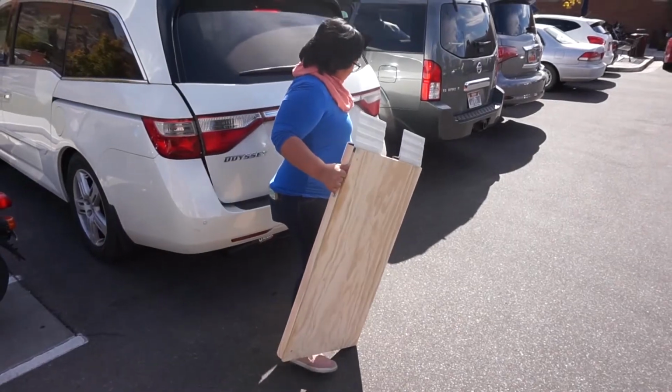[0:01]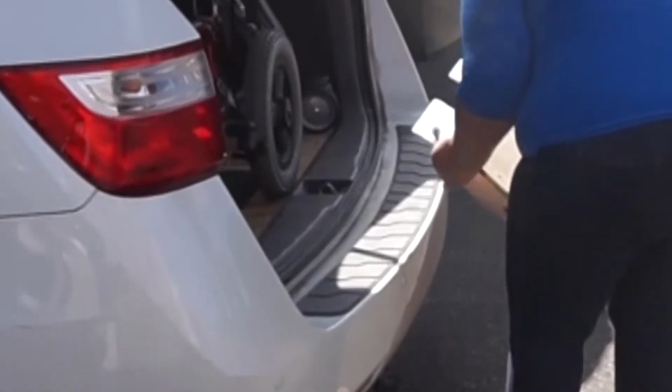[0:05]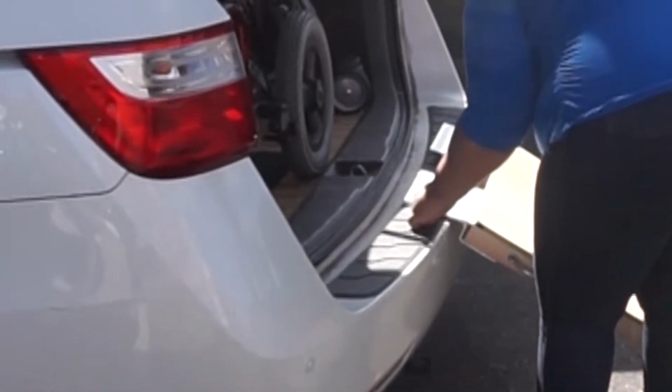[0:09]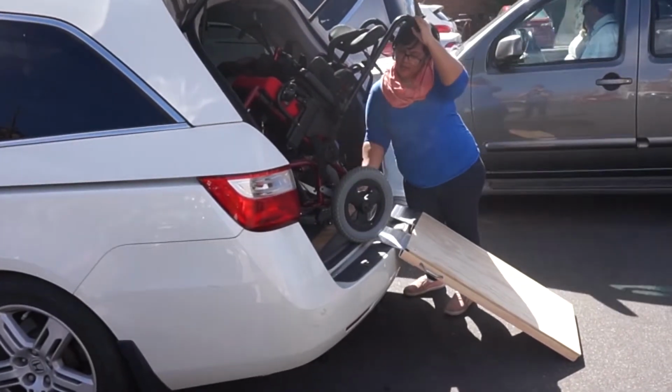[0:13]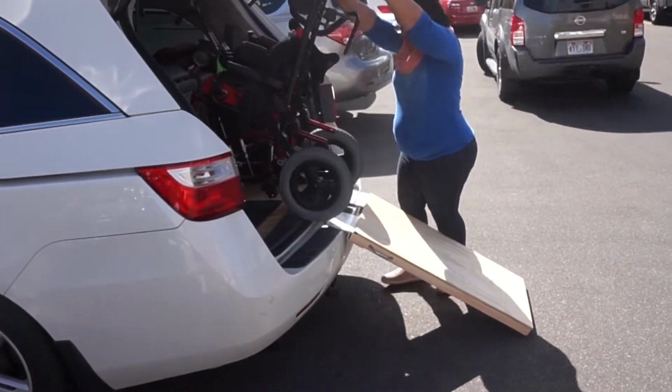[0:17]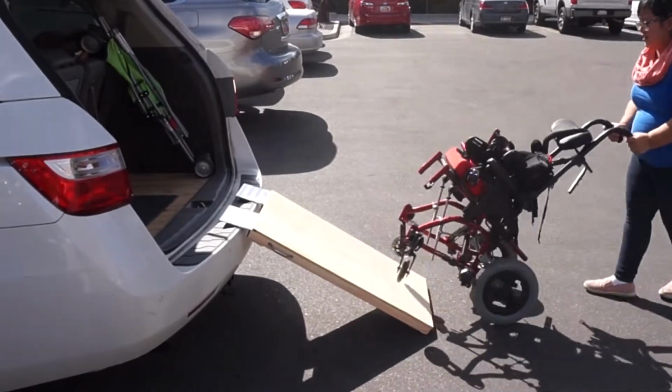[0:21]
Hey guys, today's video is a little different in hopes that I can help someone out there looking for a way to get their child's wheelchair into their vehicle with a low budget. Why I didn't do this any sooner, I'm not sure, because it has helped so much. I have searched the internet for a do-it-yourself child's wheelchair ramp, but haven't found anything, so I wanted to do something about it. So I hope someone finds this as helpful as I have.
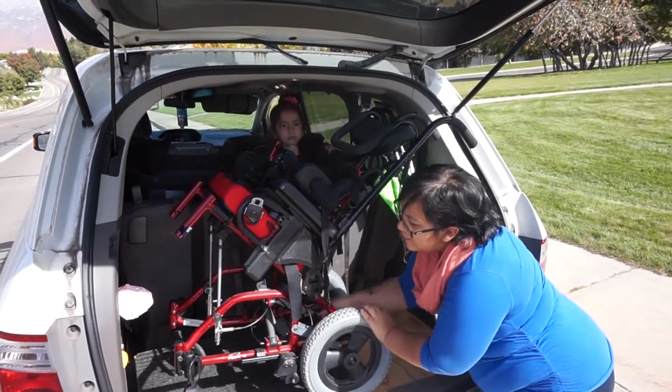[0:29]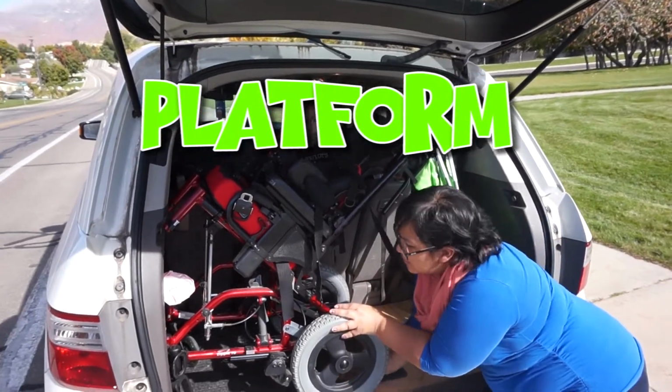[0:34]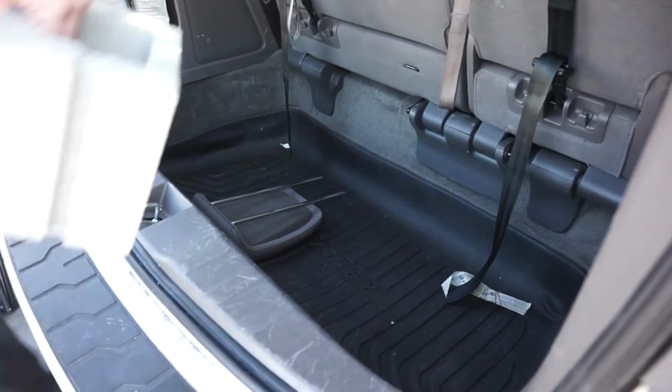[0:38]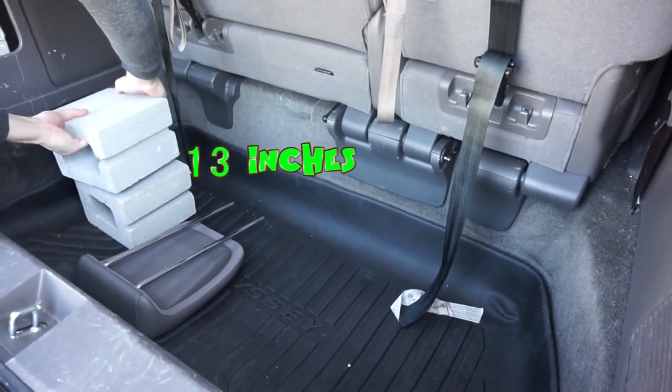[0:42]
Since the only place the wheelchair fits is the back of our van, I wanted a platform to make it easier to get a wheelchair in and out. So let's begin with the platform. I needed the platform to sit 13 inches high. We started with placing a couple of cement blocks on each side.
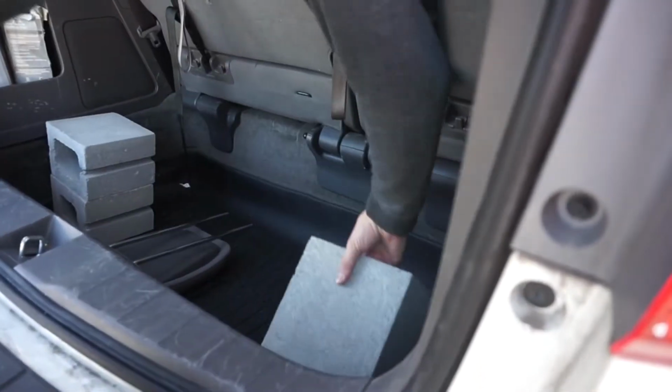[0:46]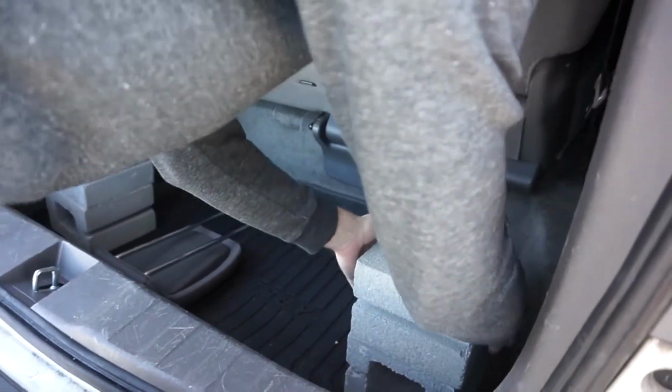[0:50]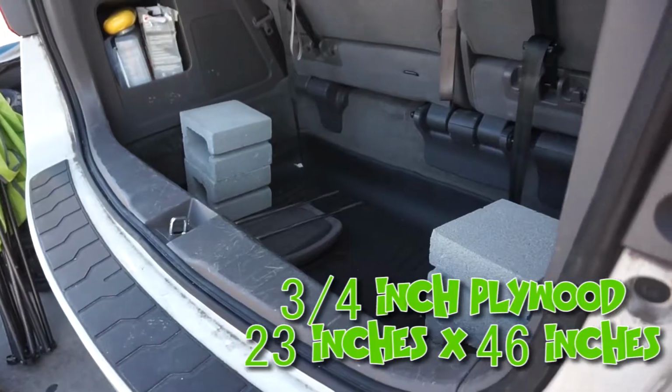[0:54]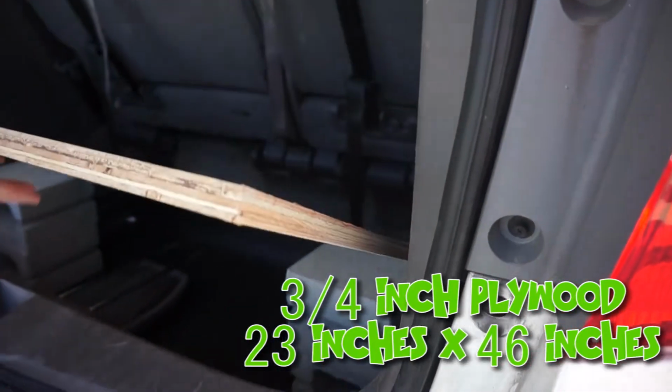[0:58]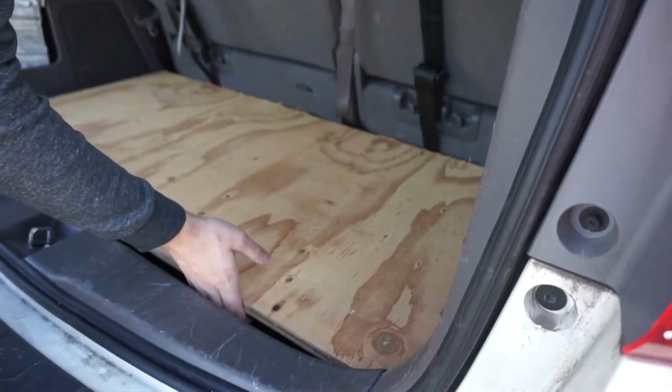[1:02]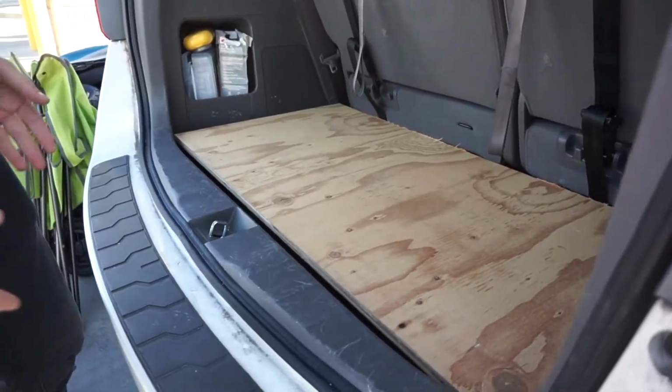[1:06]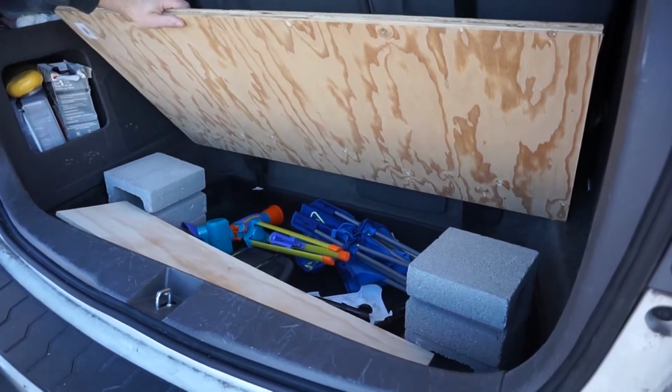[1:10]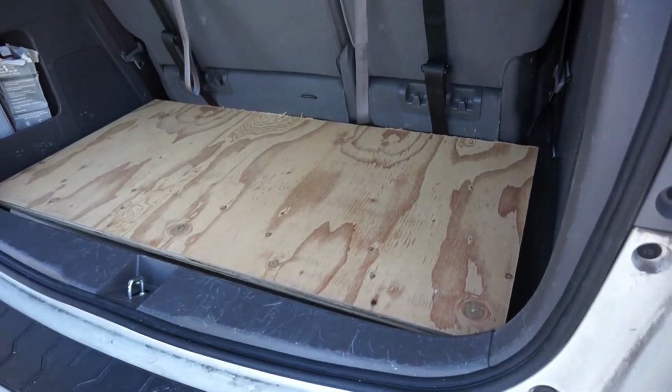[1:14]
On top of the cement blocks, we placed a piece of 3/4 inch plywood. We bought ours at Home Depot and had them cut it into a 23 inches by 46 inches rectangle. But make sure that you measure the shortest part of the back of your vehicle before you have it cut. It works great, and we have room for storage. I'm sure we could even fit some groceries under there.
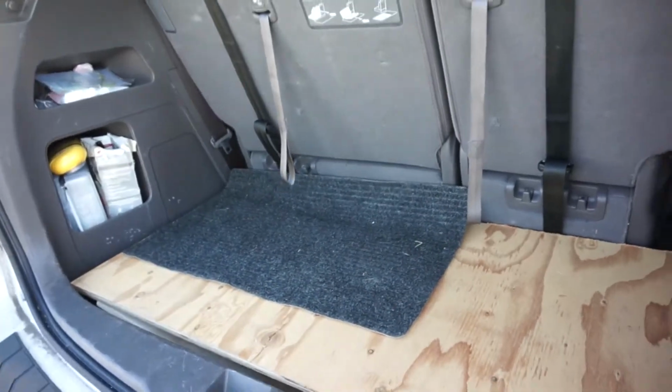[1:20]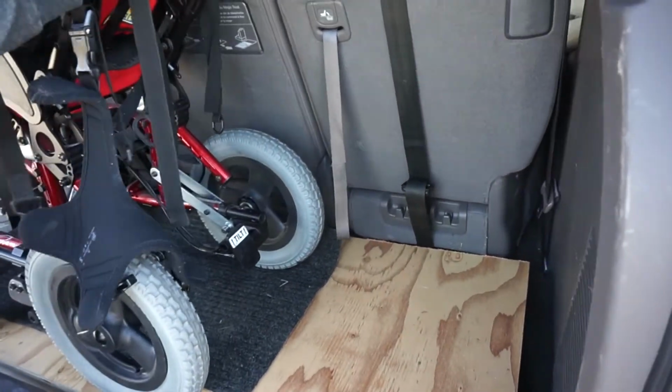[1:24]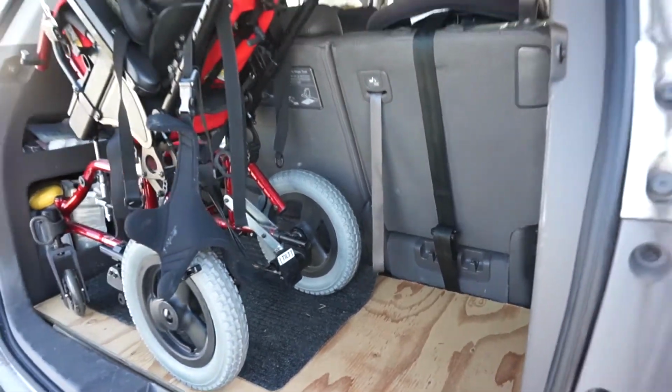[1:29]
Casey was having to carry the wheelchair in and out, and I felt like I couldn't go anywhere. Since I am pregnant and I can't carry the wheelchair, going out has been really difficult. But now I actually feel so free, like I can actually go to places.
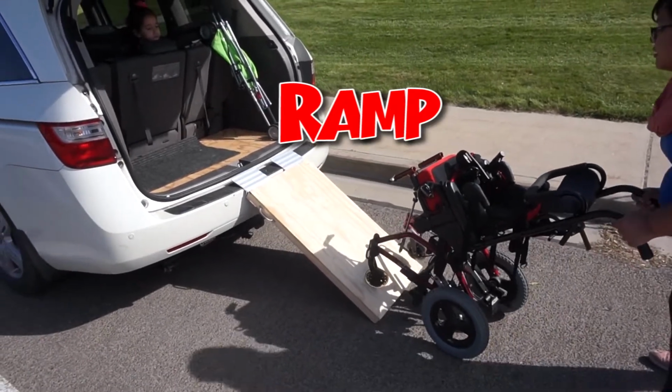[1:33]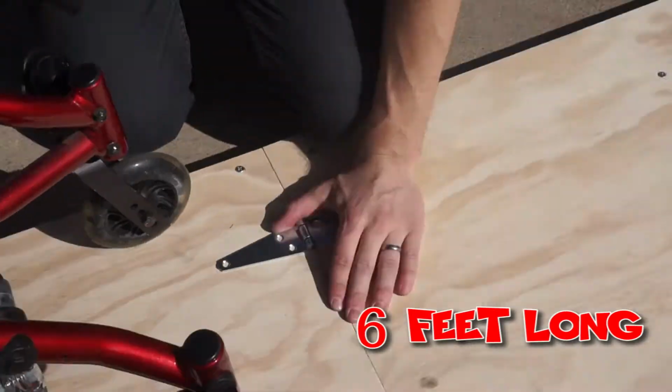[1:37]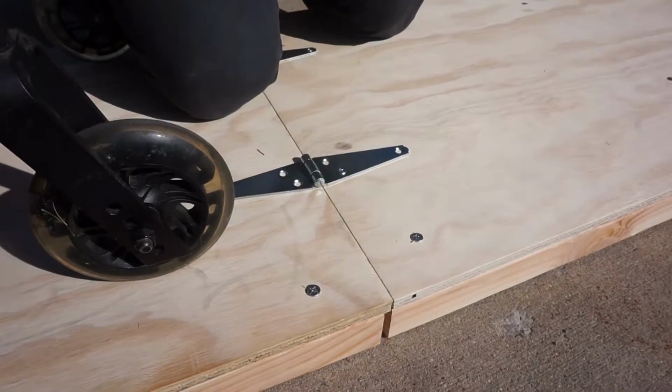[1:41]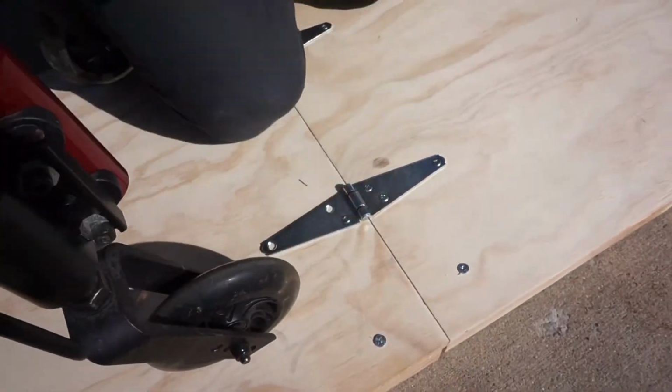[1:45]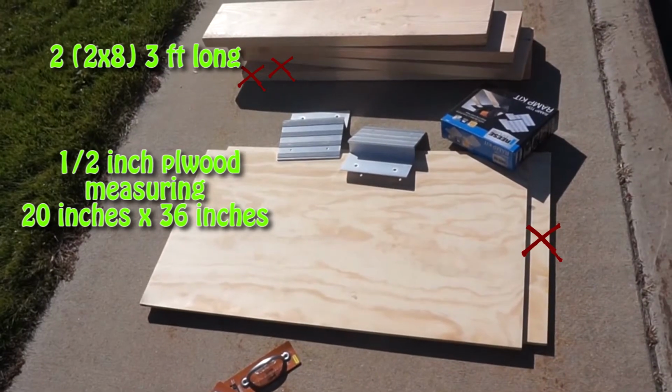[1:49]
For the ramp, it is a little steep, but it takes up so little room. We started by building it to be 6 feet long, to fold and not be steep. But in the end, it ended up being heavier than I wanted and thicker too. So the smaller, steeper ramp works better for me. We only used two 2x8s that were 3 feet long and a 1/2 inch plywood measuring 20 by 36 inches. I made it 3 inches wider than the wheelchair's width.
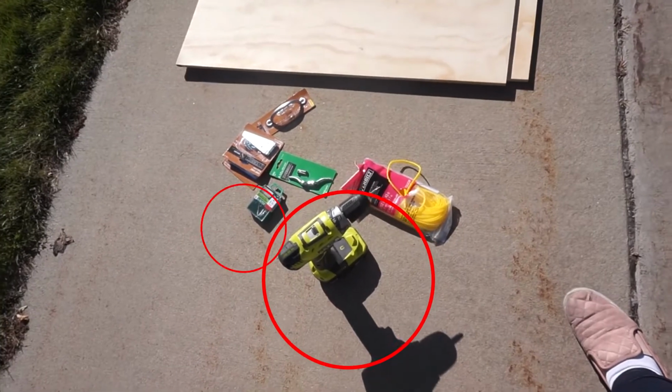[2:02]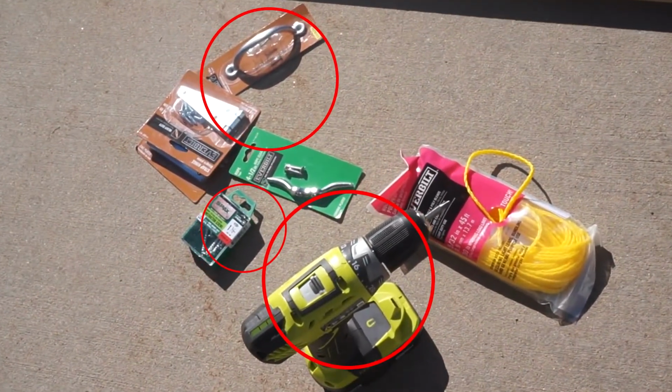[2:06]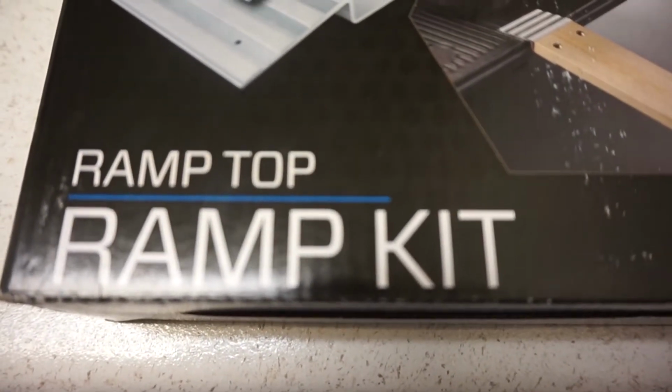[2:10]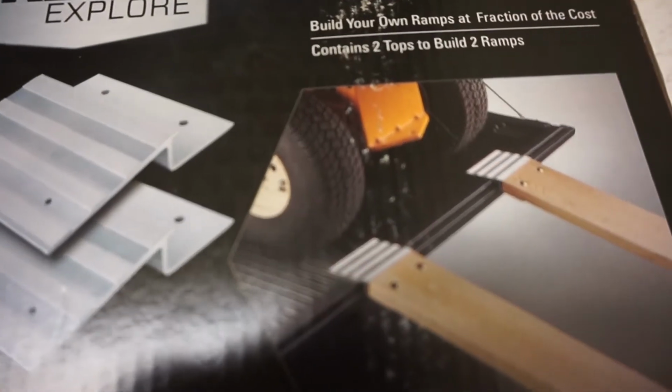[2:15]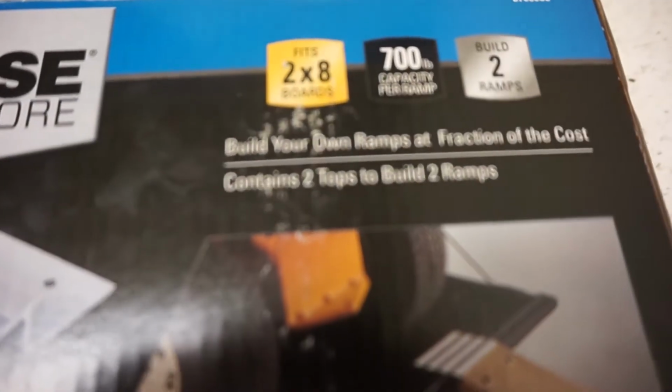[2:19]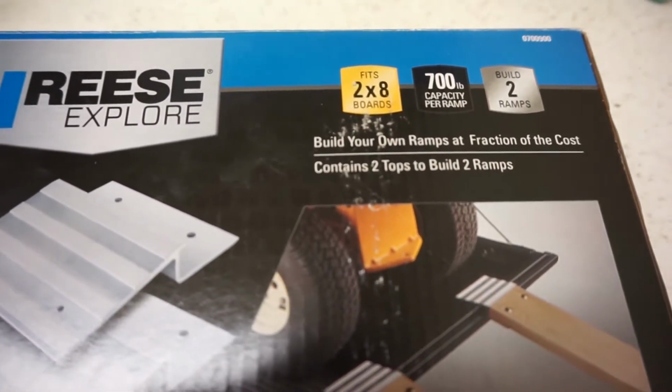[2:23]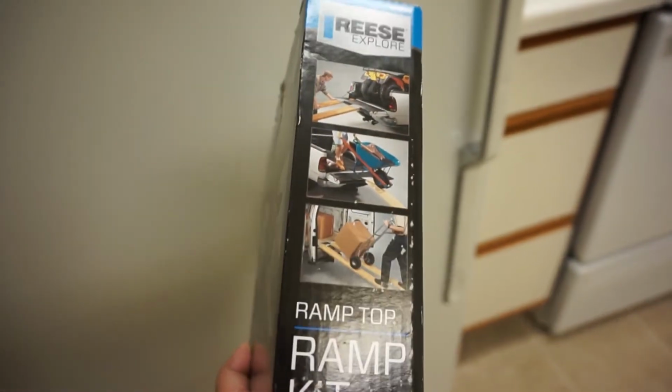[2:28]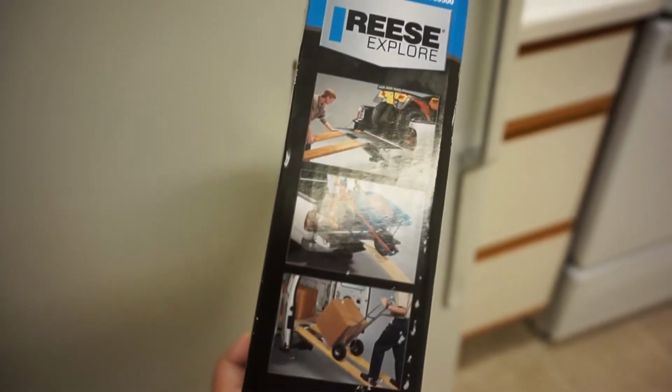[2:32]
We used a drill, 1.5 inch wood screws, and a drawer handle. The best purchase was the ramp kit that cost about $20 at Lowe's. This made the ramp possible and much cheaper and lighter in weight than buying actual already made ramps. The box contains 2 tops and screws are also included, but we used our own screws anyway. This kit is normally used for other things and they usually just use the 2x8s, but since I wanted to carry it in one piece, I added the plywood.
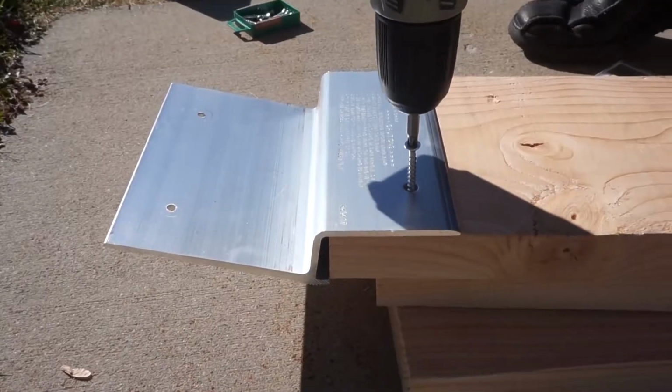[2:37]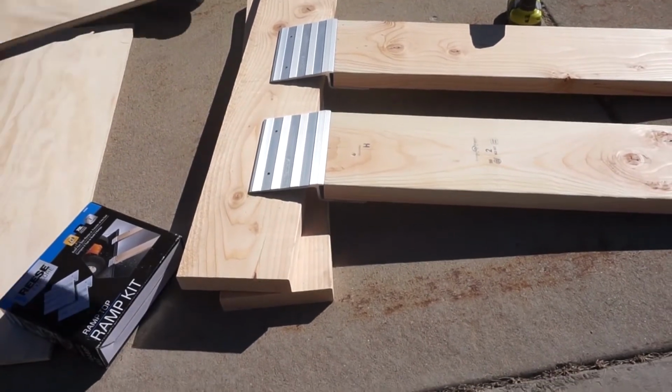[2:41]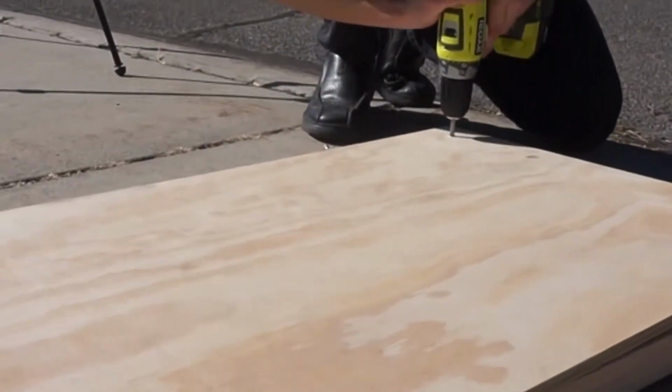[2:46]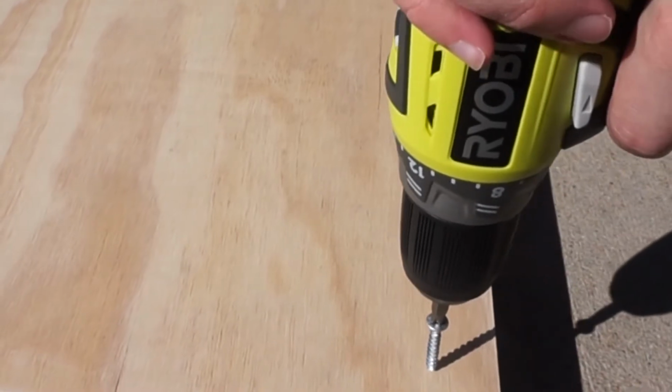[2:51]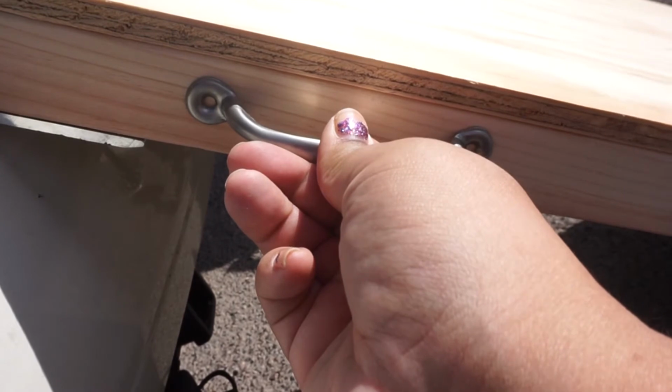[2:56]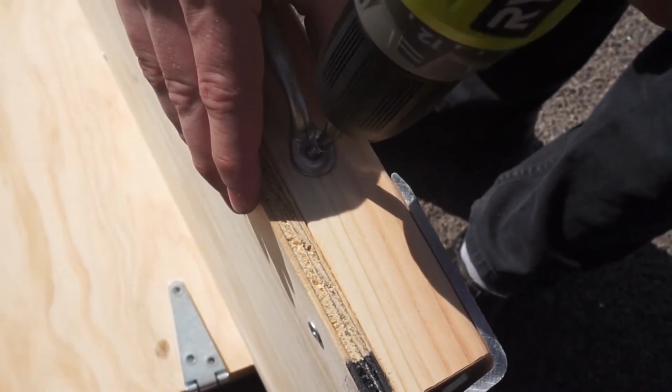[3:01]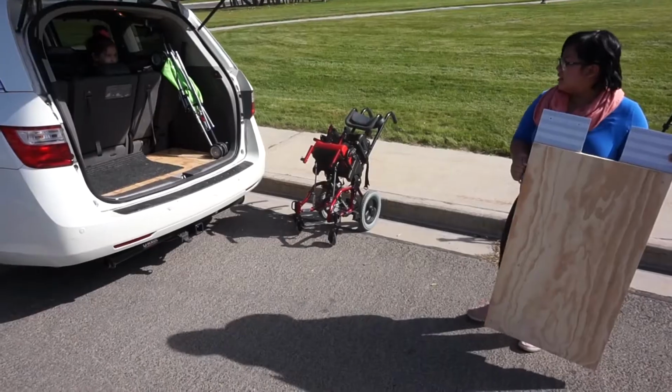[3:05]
We started by screwing one ramp top to a 3-foot long 2x8 and repeated it with the other ramp top and the other 2x8. We then screwed the plywood to the top side of the 2x8s, making sure the plywood and 2x8s were flush. We used 3 screws on each side, making sure that the 2 middle screws were closer to the middle of the ramp. Lastly, I added a drawer handle to make it easier to carry. And voila! You have yourself a cheap, easy to make, light to carry kids wheelchair ramp.
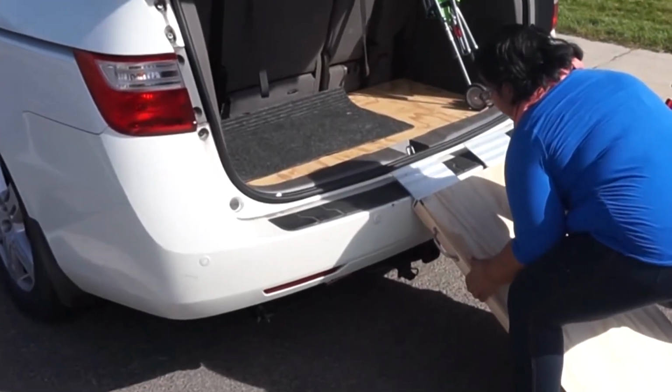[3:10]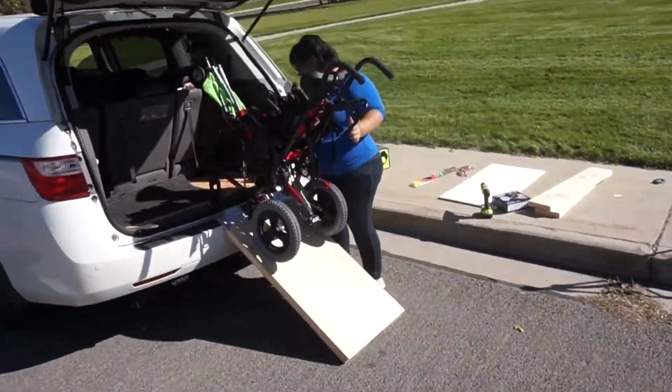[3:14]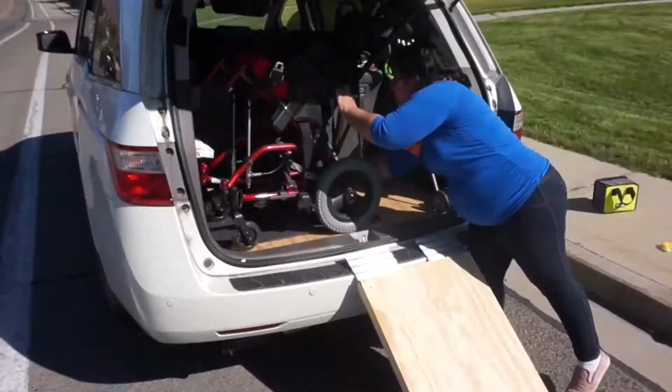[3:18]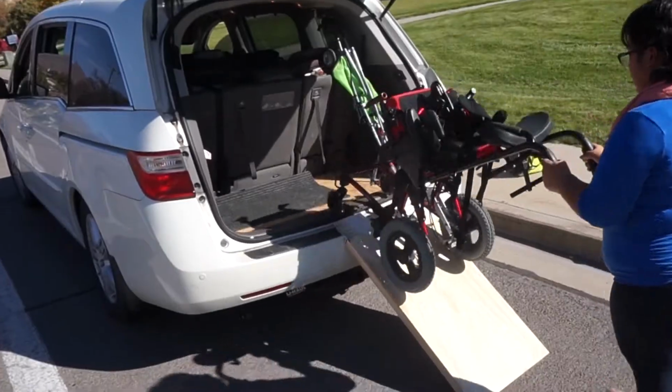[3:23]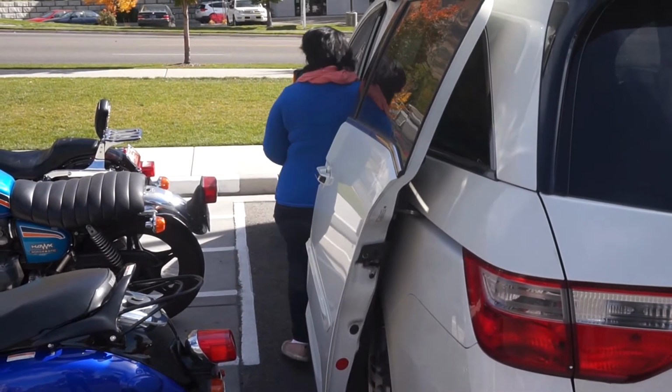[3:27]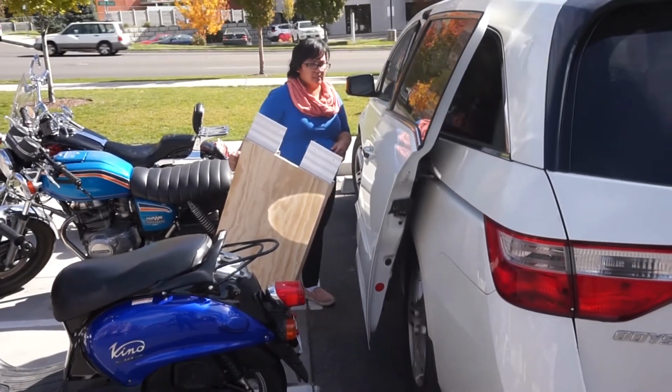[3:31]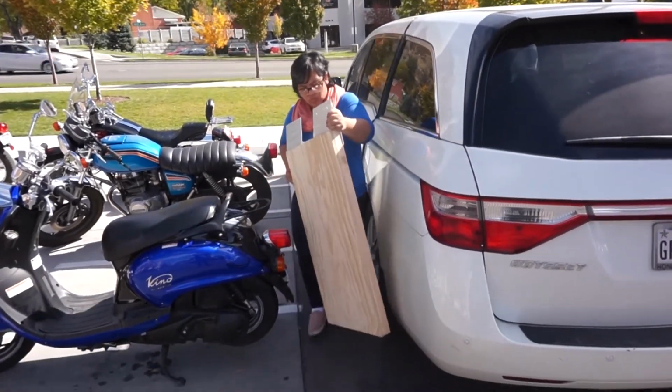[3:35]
Because of its steepness, the first couple of times were a bit difficult until I figured out the most comfortable way to put the wheelchair in and take it out. We took it out for a test run, and man, was it an easy process. Sadly, we couldn't find a wheelchair accessible parking spot, but parking by the bikes made it easier to take the ramp out.
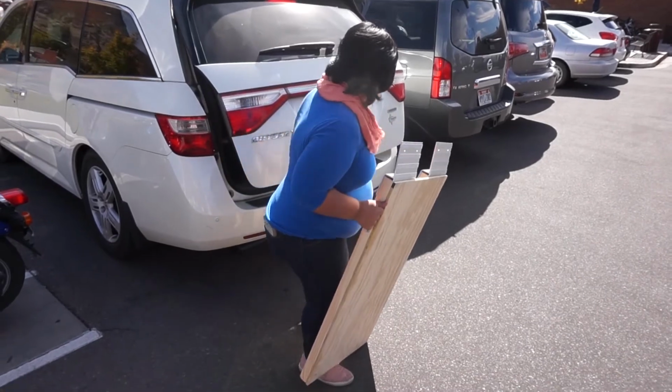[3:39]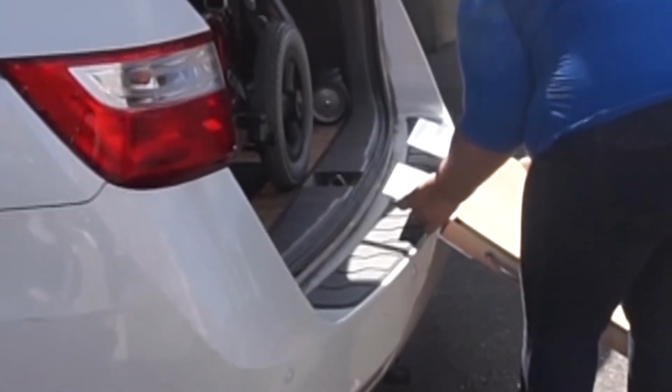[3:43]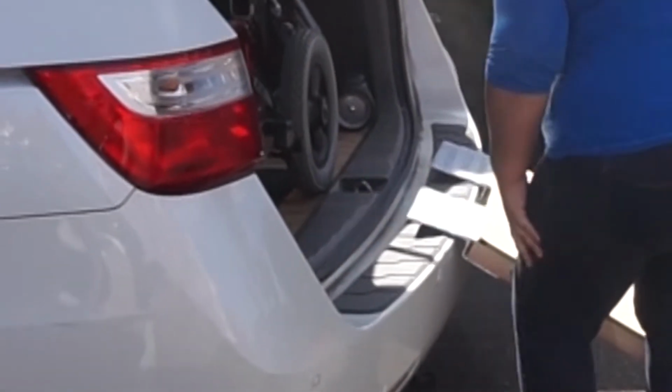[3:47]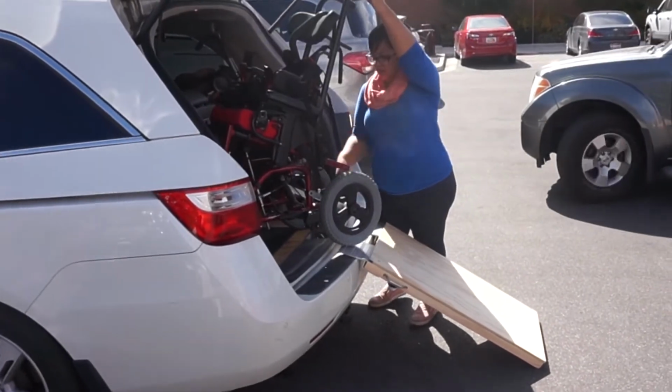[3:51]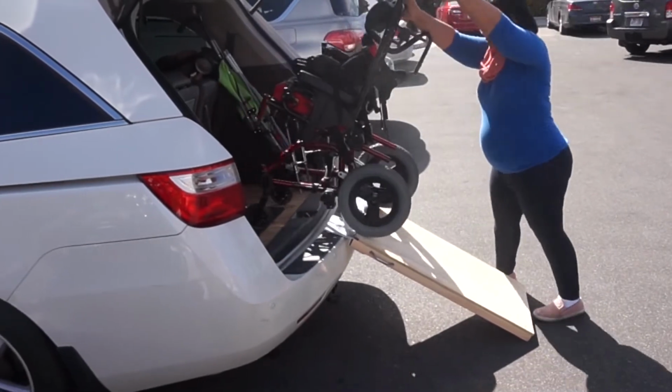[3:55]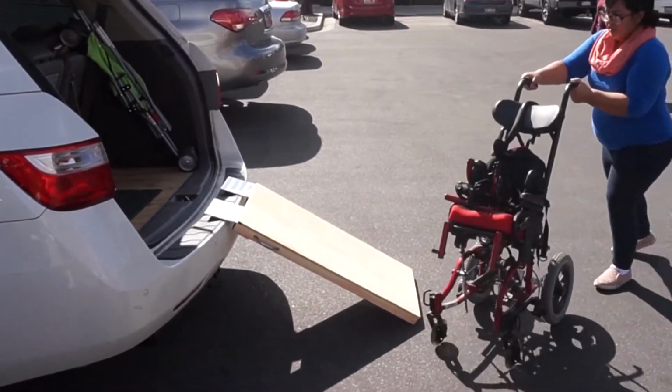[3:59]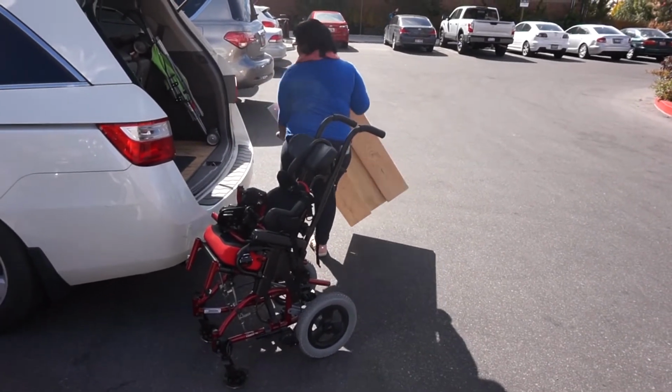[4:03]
I also learned that putting the wheelchair in with the back wheels in first is easier, and it's easier to take out the wheelchair with the back wheels out first. I do have to put the ramp in the front since it doesn't fit in with the wheelchair, but when I take the wheelchair out, I can put it in the wheelchair's place, and it will be there when I am ready to put the wheelchair back in.